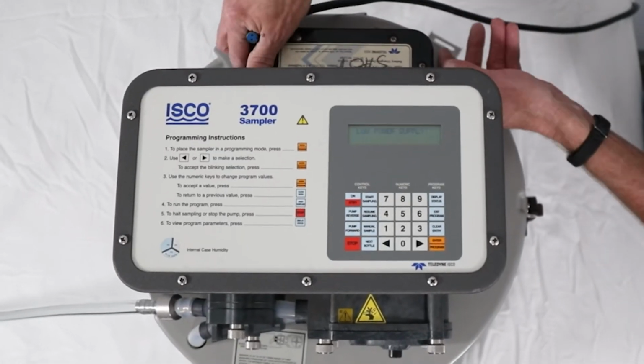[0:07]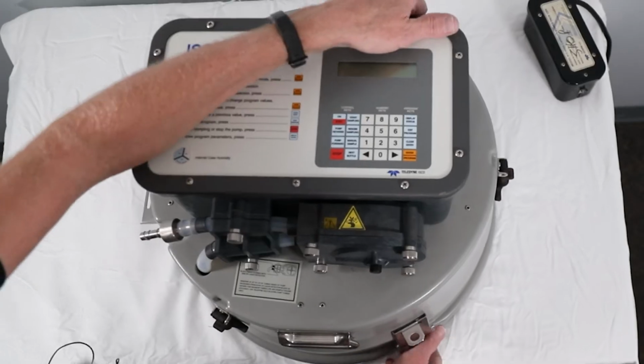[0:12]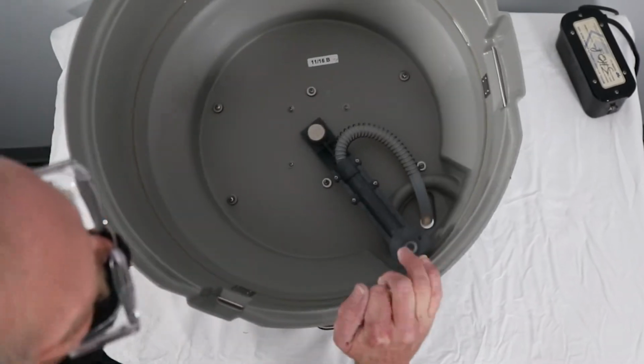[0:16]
Remove power from the unit. Disconnect the suction line. Turn the sampler upside down to access the distributor arm on sequential samplers or float cage on composite samplers.
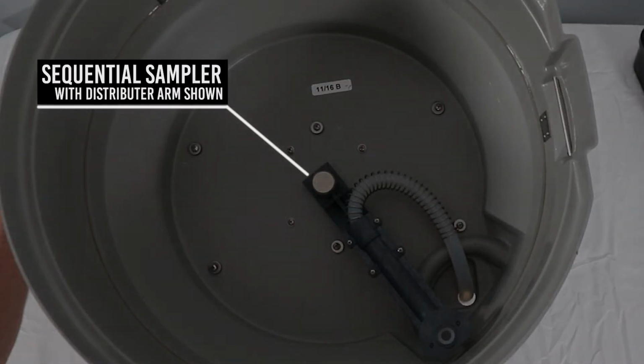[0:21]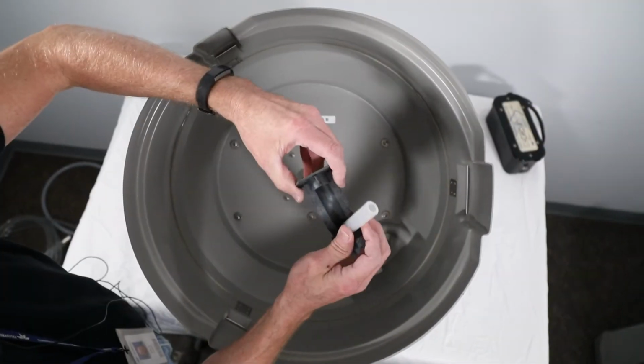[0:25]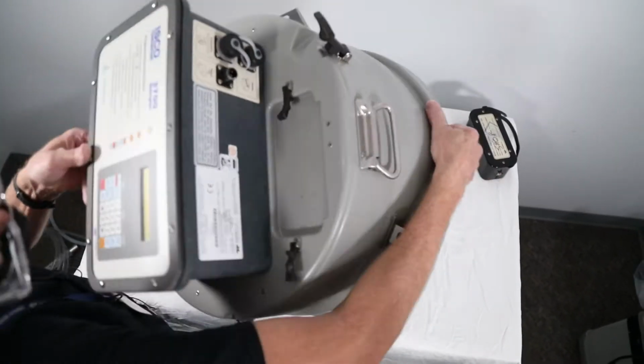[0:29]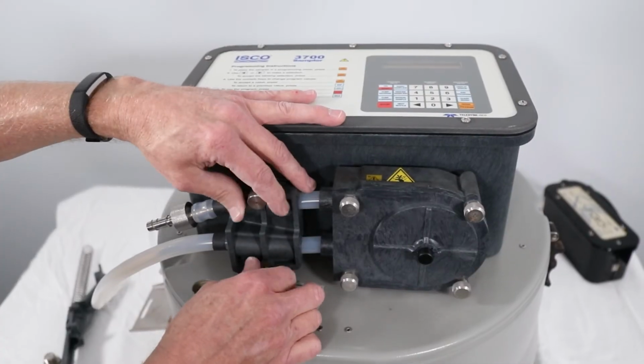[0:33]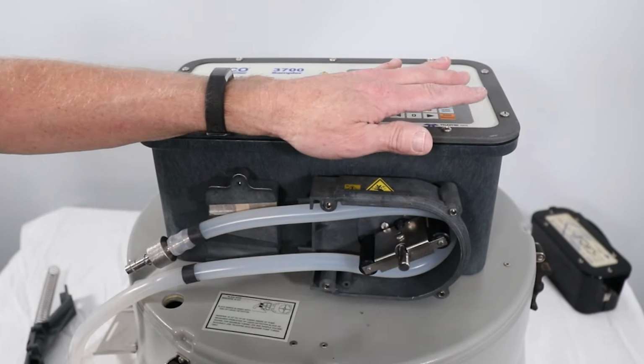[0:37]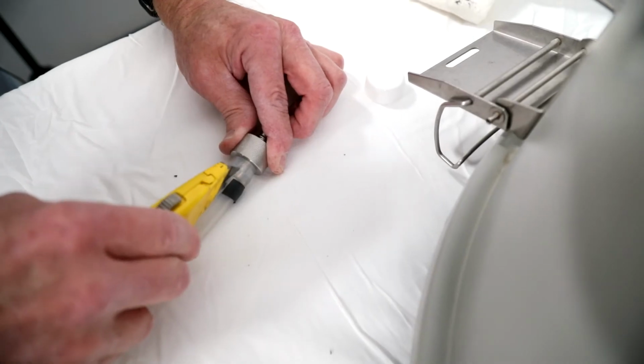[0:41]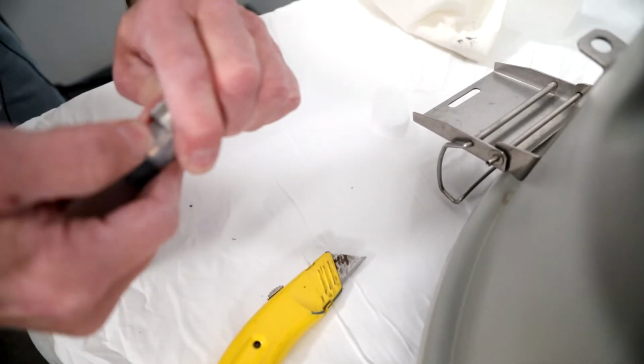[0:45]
Remove the distributor arm nut and remove the tubing from the distributor arm. Turn the sampler right side up and pull the pump tubing out of the center section. Loosen the thumb screws and remove the liquid detector cover, as well as the pump housing cover, and remove the old pump tubing. Remove pump tubing from the tubing coupler by pulling or using a utility knife.
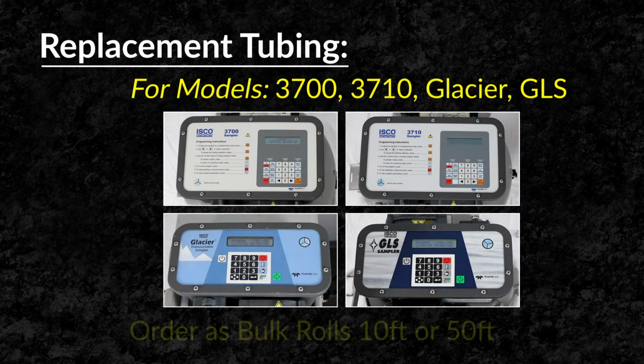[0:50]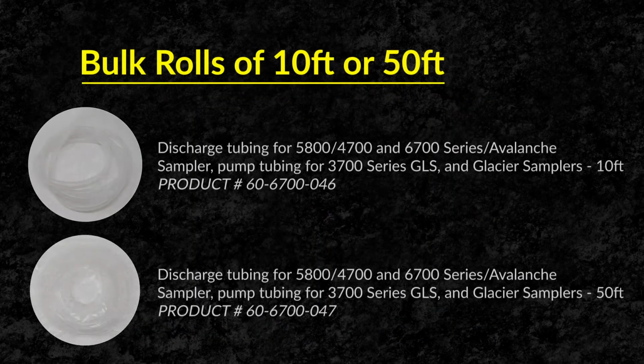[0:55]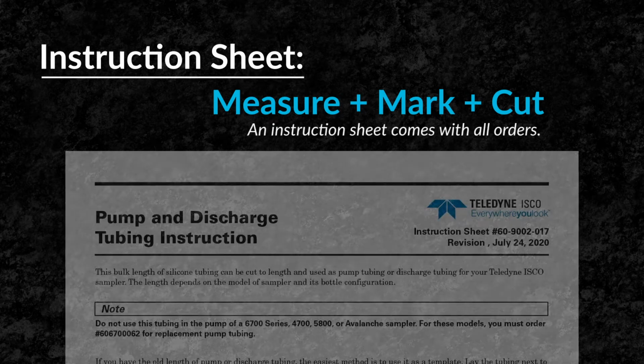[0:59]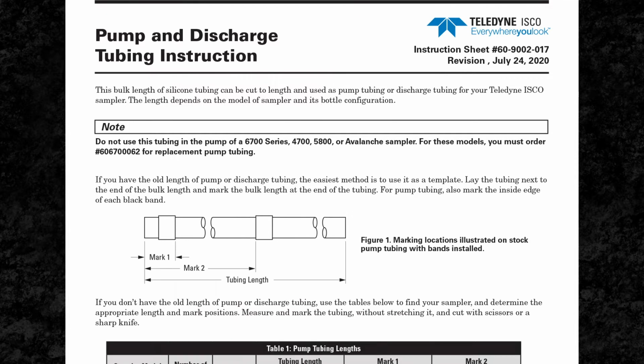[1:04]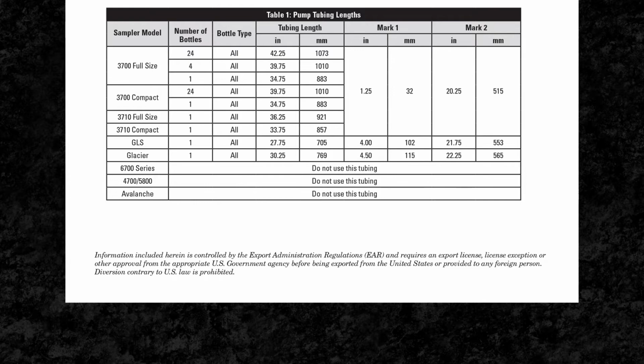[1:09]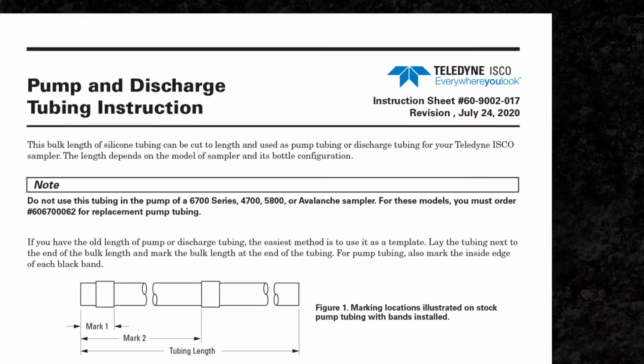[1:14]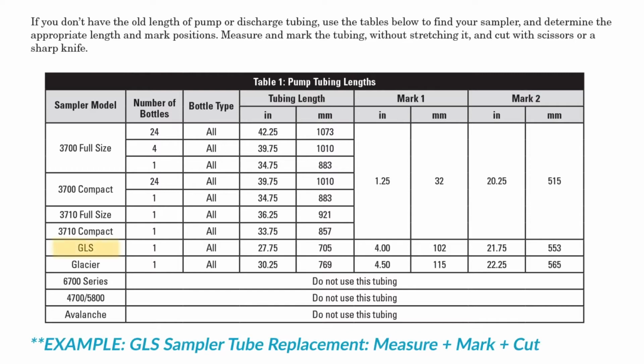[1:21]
Replacement tubing is available in bulk rolls of 10 feet and 50 feet lengths. Each bulk roll includes an instruction sheet that shows you how to properly measure, mark, and cut your replacement tubing depending on the sampler model and the specific bottle configuration. Follow the instructions for your specific sampler model and bottle configuration to determine where to mark the replacement tube.
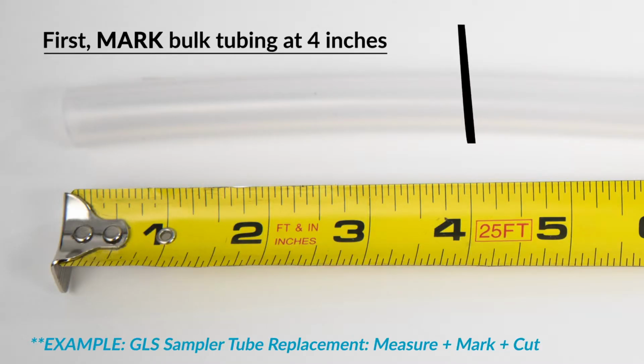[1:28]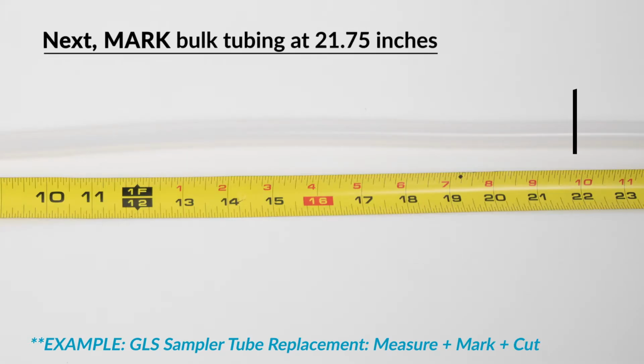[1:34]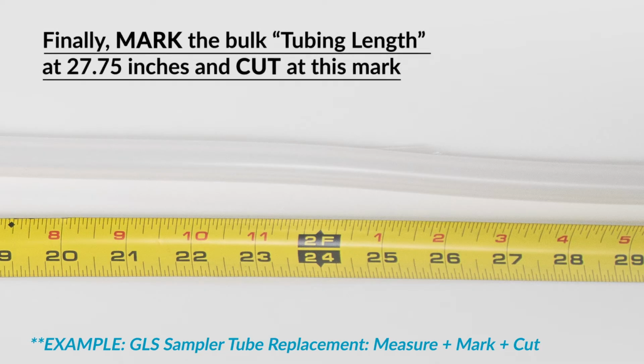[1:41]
Starting at one end, apply the first installation mark. Then measure to the second installation mark. And finally, measure and mark the overall length of the replacement tube. After the installation and overall length marks are in place, cut the tubing at the overall length mark.
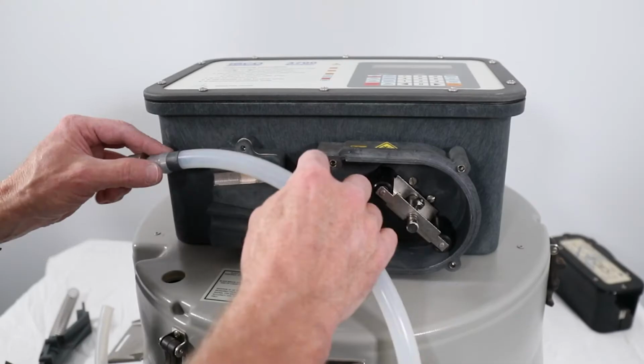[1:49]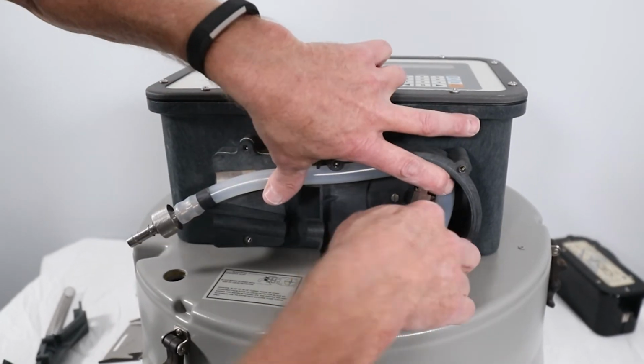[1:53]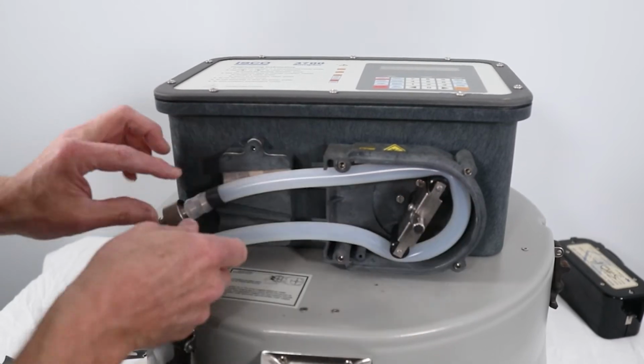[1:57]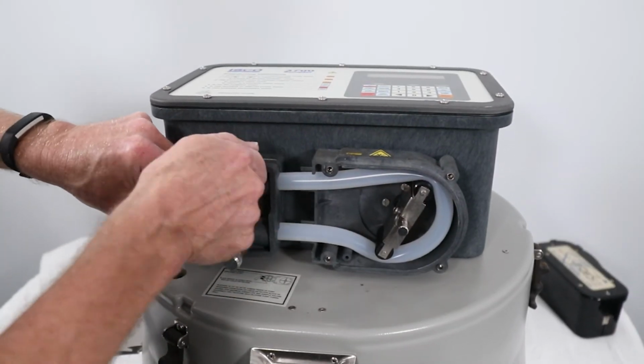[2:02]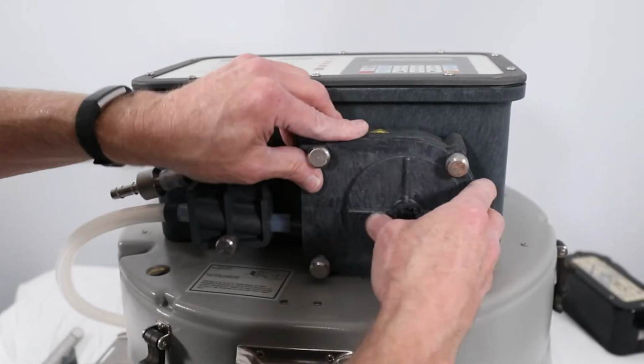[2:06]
After reattaching the tubing coupler to the new pump tubing, carefully align the pump tubing past the liquid detector and into the pump rollers. It can be helpful to manually rotate the pump rollers to best align the new tubing. Reinstall the liquid detector cover and the pump housing cover and feed the remaining tubing down into the center section.
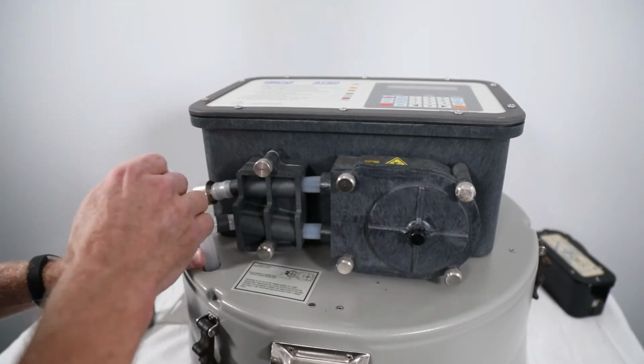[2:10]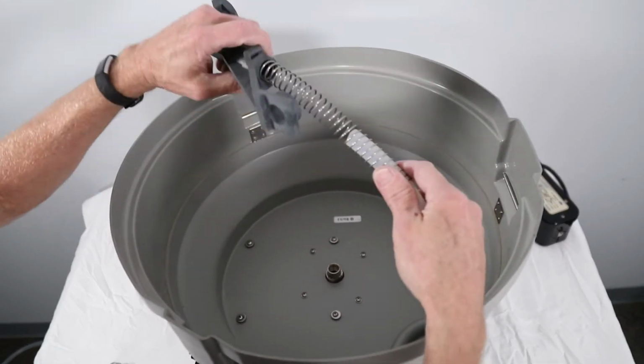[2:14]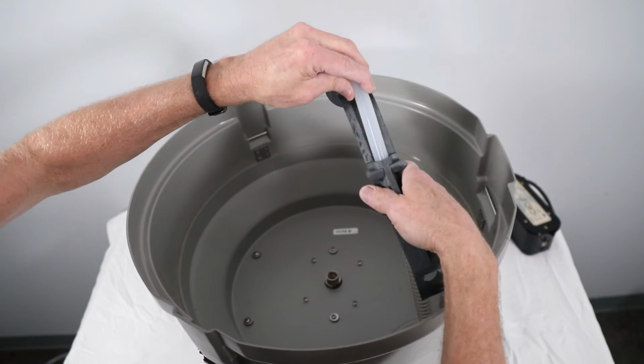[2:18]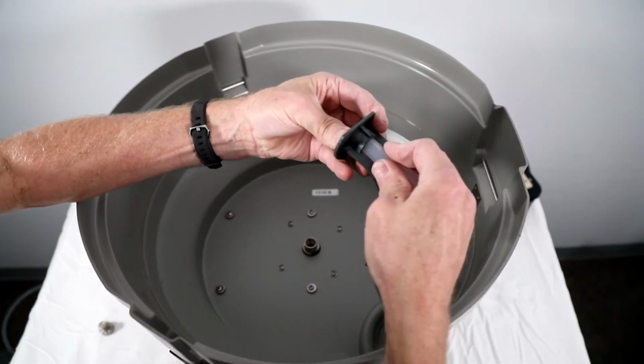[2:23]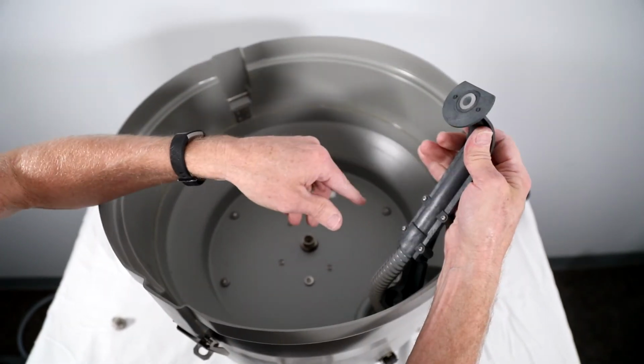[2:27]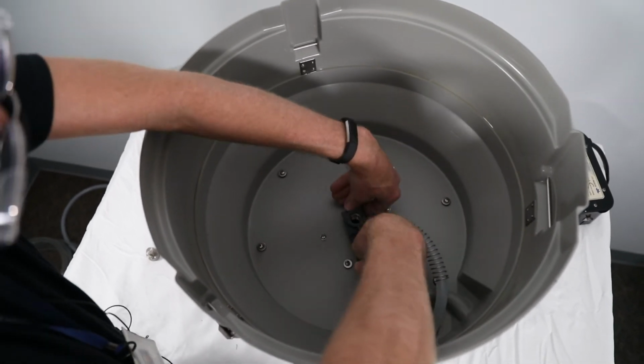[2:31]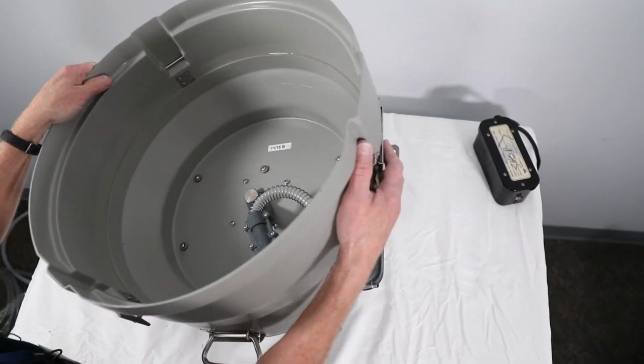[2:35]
Turn the sampler upside down and feed the new pump tubing through the distributor arm so that the end of the tubing is flush with the end of the distributor arm. If the pump tubing extends past the distributor arm, it may contact the bottles and cause a distributor jam. Position the distributor arm into place and secure with the distributor arm nut. Turn the sampler right side up and reapply power.
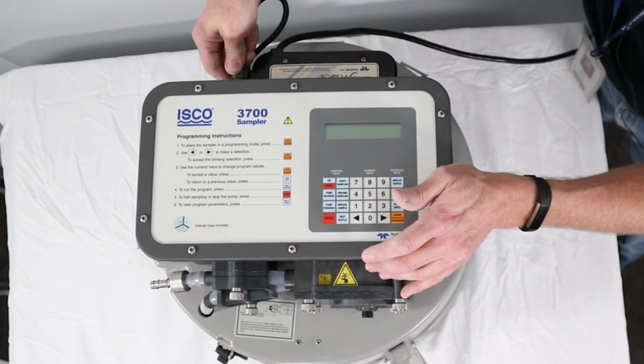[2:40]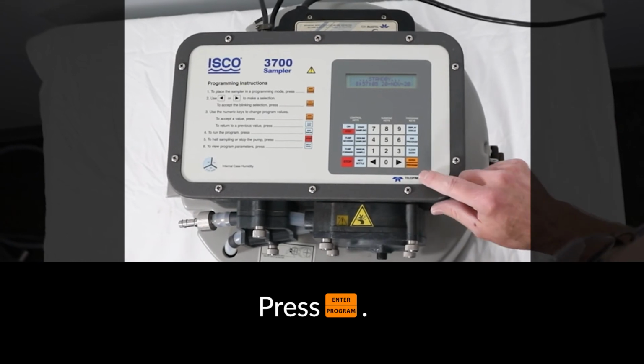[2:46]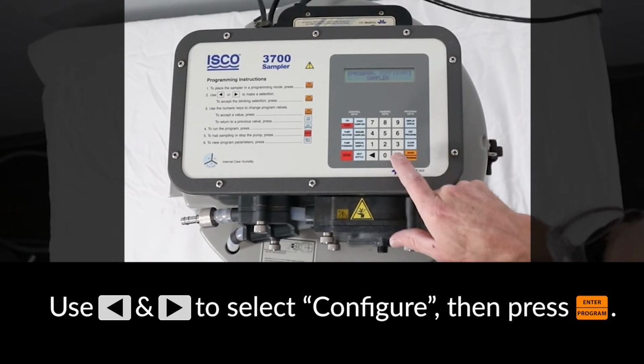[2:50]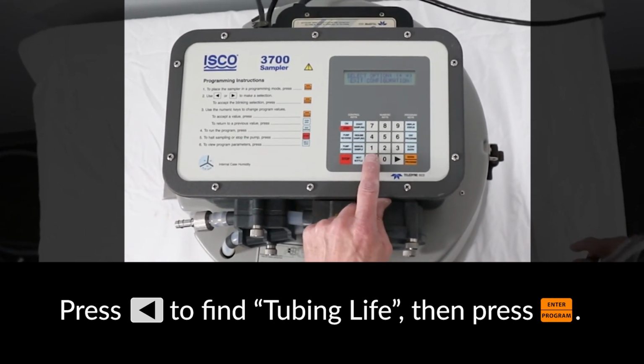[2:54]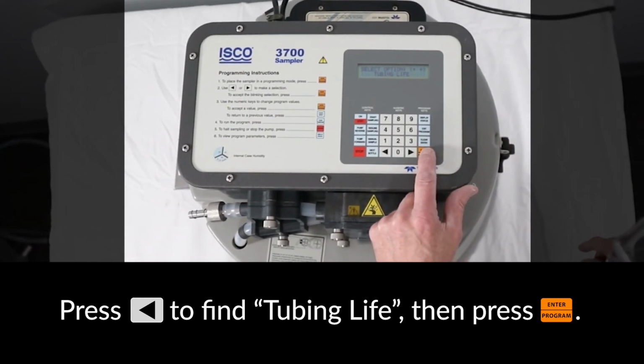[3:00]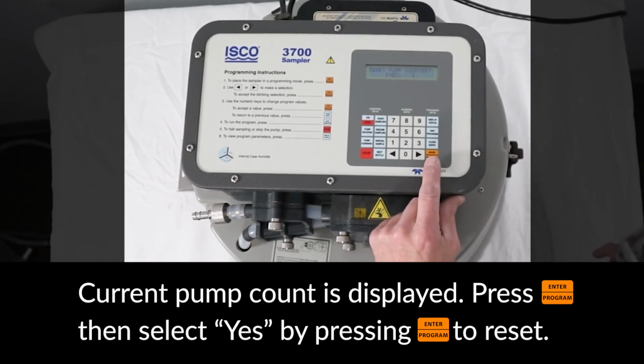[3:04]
To reset the tubing counter, press the Enter key. Then use the arrow keys to select Configure. Then press Enter. Press the left arrow key until you see Tubing Life. Then press Enter. The current pump count limit is displayed. Press Enter and then select Yes to reset the pump counter.
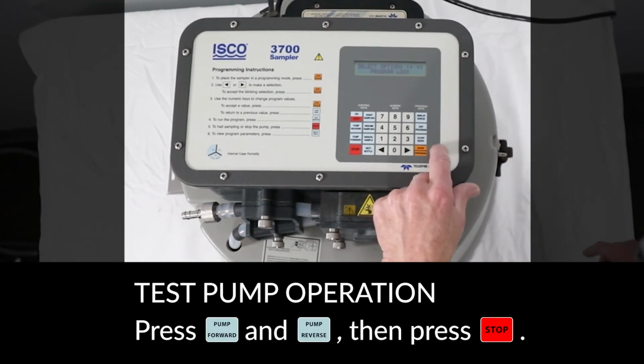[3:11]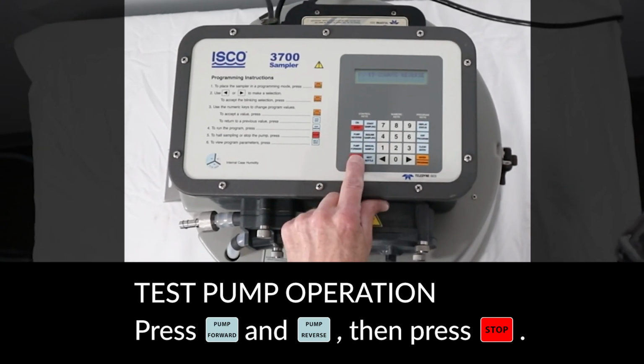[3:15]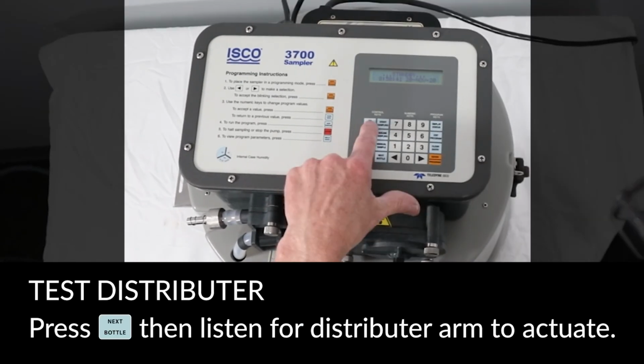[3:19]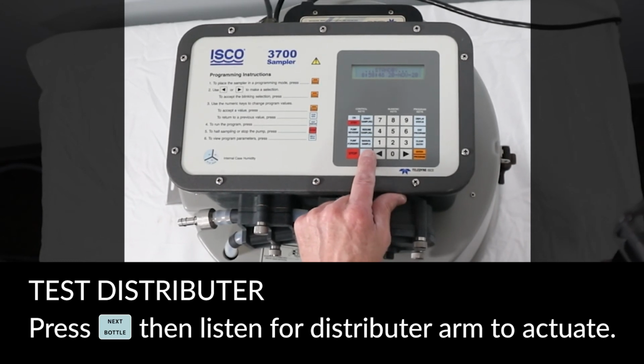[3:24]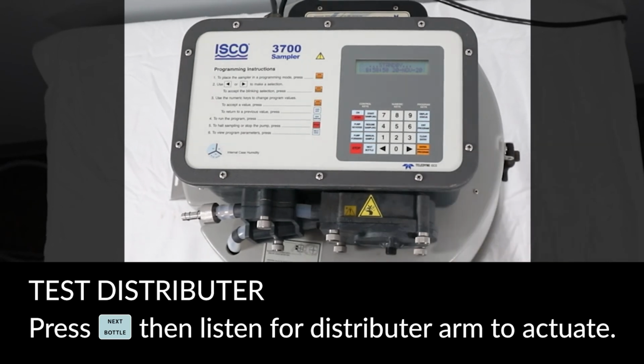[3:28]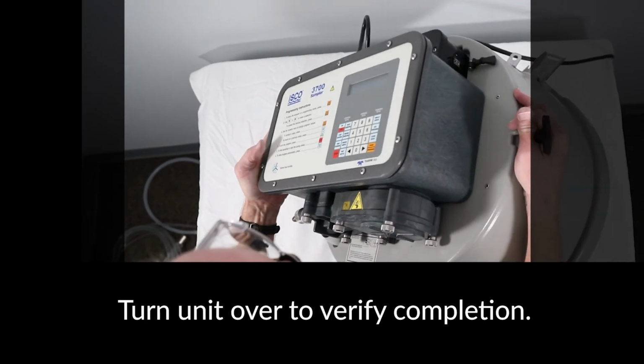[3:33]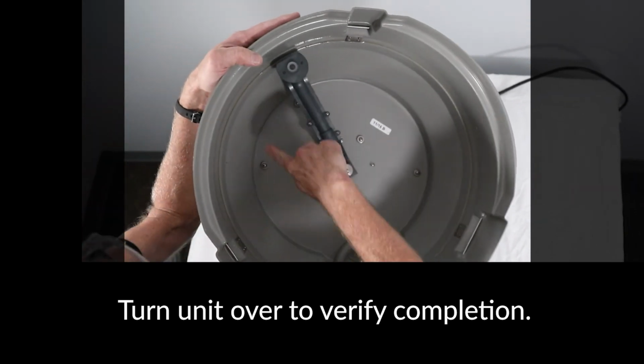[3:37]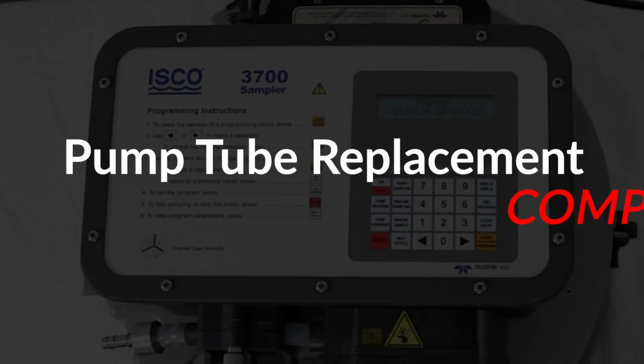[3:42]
To test the pump operation on the new tube, press the buttons on the control panel to run the pump in both forward and reverse for several seconds. To test the distributor, press the Next Bottle button several times and then listen for the distributor arm to actuate. Turn the unit upside down and verify that the distributor arm moved properly and the pump tubing is not kinked. Pump tube replacement is now complete.